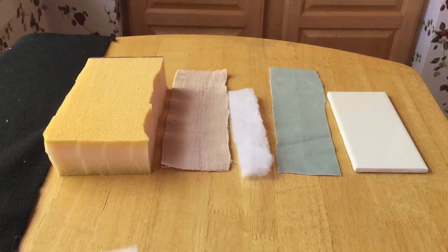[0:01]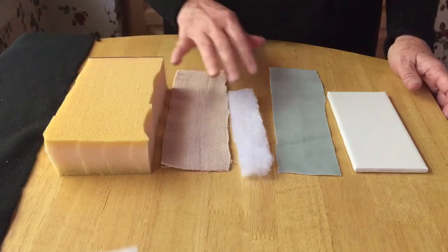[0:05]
I've had people ask me how I made the suturing practice station that you see me use on my YouTube channel. So I thought I would do a demo video so you can see how to make it yourself.
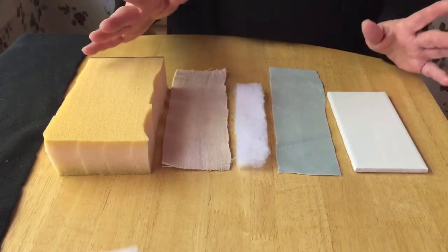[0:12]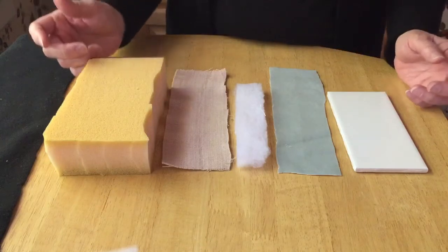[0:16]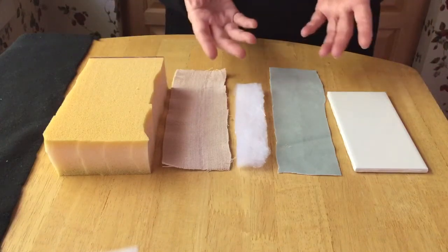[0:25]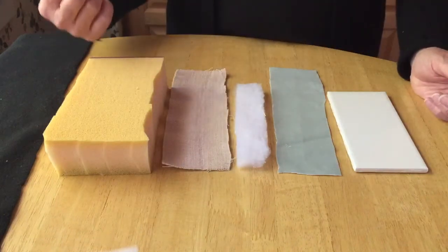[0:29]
Let me tell you first, I tried pig skin, I tried pig's feet, I tried chicken breasts and banana peels, and nothing worked as well as when I finally took a Swiffer mop head, you know, that paper, and wrapped an Ace around it and used a 6-inch Ace. I found the flexibility of the Ace mimicked the skin really well.
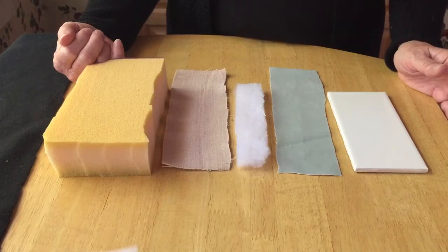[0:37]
So it was really crude, and I wanted to come up with something that looked more professional that I could use for the suturing lab presentations that I do. So I'm going to tell you what the supplies are.
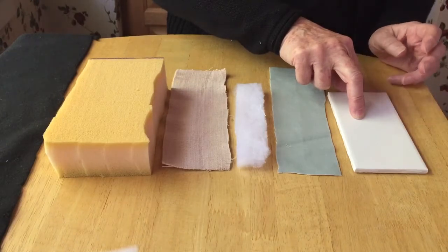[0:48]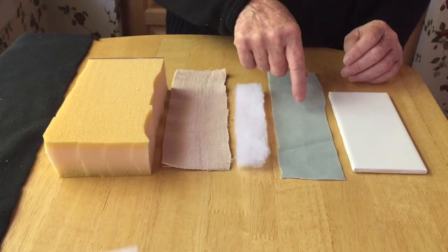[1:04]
A tile or a metal plate that I got from Lowe's or Home Depot. I did this because I was carrying 20 of them. I didn't want to carry 20 bricks. But if you're only making one of them, I would suggest you use a brick, because that gives you some nice weight for it. Then you choose any color felt or material that you want.
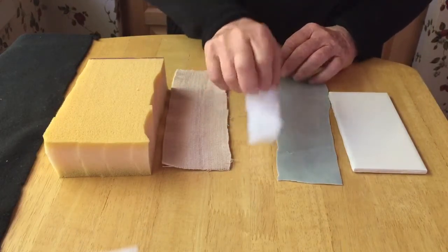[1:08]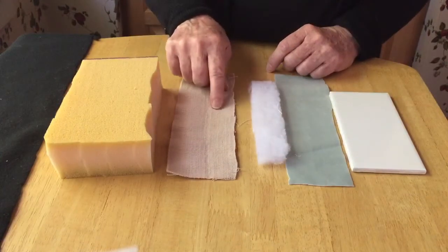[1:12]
This is kind of like a suede, which you want for your dermis. You choose some batting to make your dermis a little bit thicker. An Ace, you either use a 6-inch Ace cut in half, which is what this is, or a 4-inch Ace not cut in half.
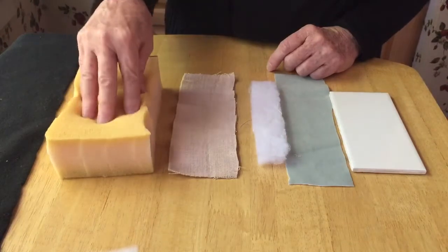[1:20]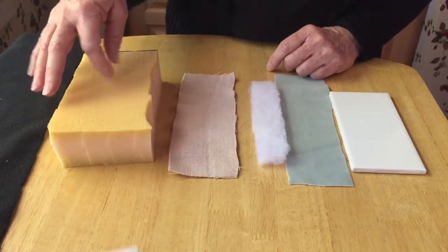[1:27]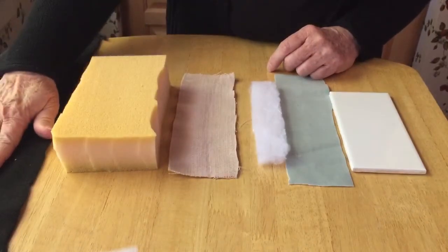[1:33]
And then you have a foam, and I like this foam that's kind of a memory-foam type because it's soft and you can actually keep your incision, quote, incision a little bit wider, so that you have to tie under tension and it mimics that. And then you need a felt, and I used a felt because I wanted something that would have traction. So if you put this on a surface that's textured, it's not going to slide. That was why I chose that.
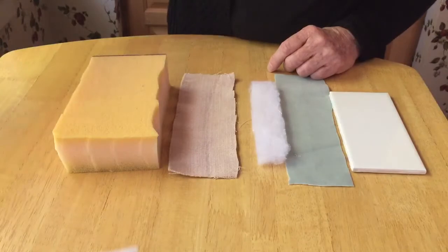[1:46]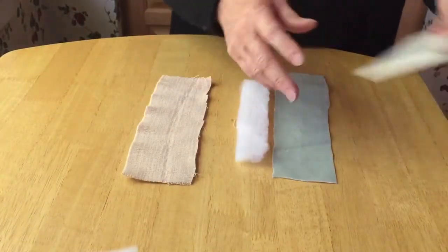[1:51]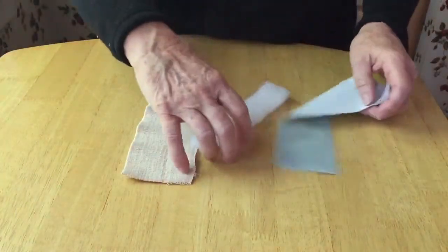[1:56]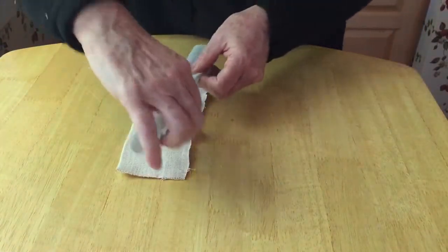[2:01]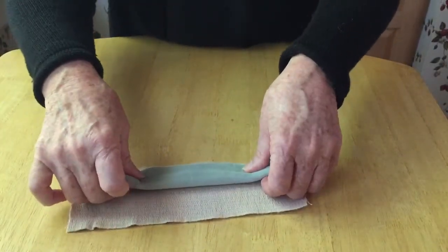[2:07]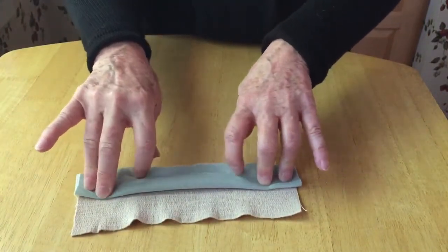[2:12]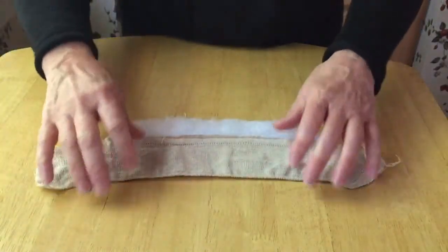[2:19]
Now let's go through the steps of how to actually put it together. So you take your quote dermis, and you fold it around the batting. And then you attach it and sew it. I may say suture instead of sew, but it's just because I'm thinking about the operating room. Then you sew it here to the Ace. And you do that twice because you have the two sides of the incision. So what you end up with is two pieces like this.
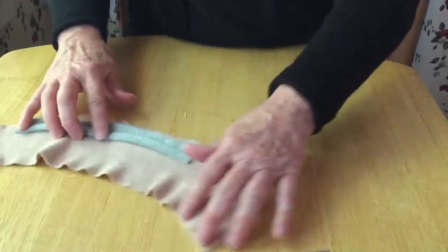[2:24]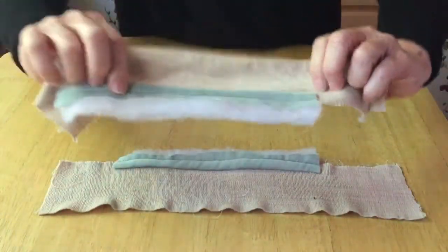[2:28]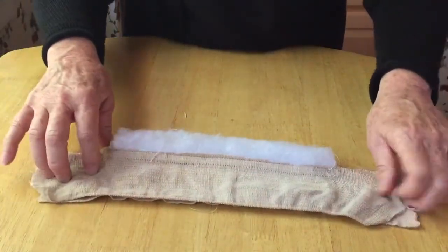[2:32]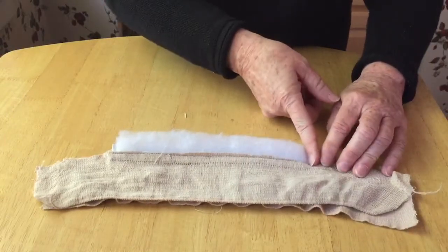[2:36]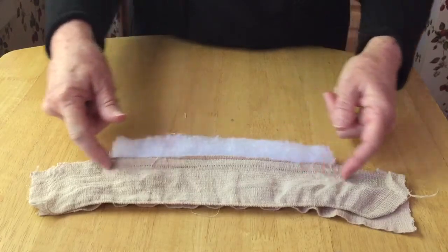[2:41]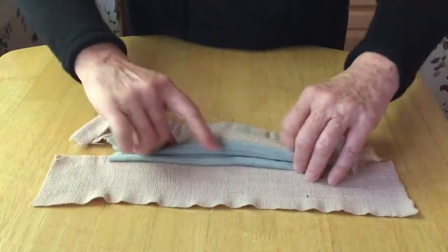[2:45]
So you take your two pieces and you put them colored sides together, and then you want to sew the two sides of the Ace together up over the dermis and over the top of the brick so you can mimic the corner of an incision. So you would sew it here. When you're done sewing, you open it, you would have an incision open here and it'd be sewed up to here. The next one will show you what that looks like.
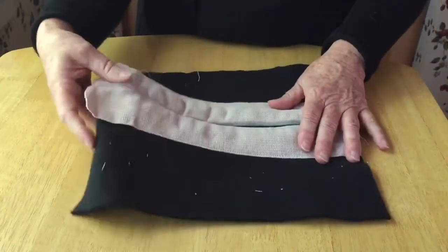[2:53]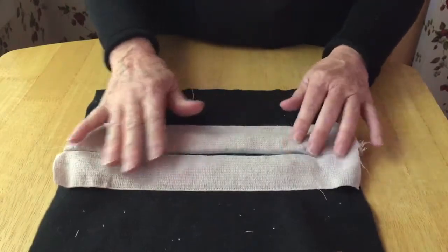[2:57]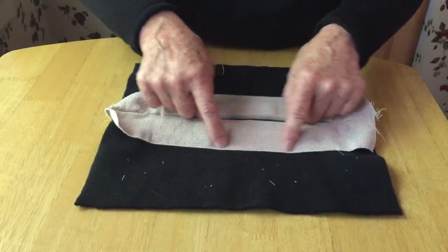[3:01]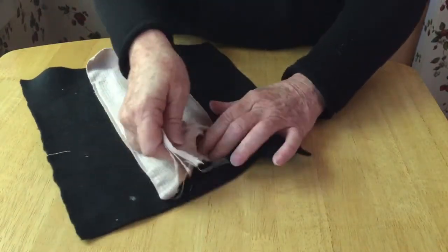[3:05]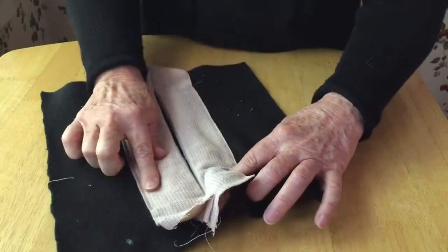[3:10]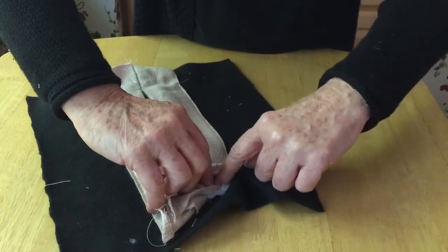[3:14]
This is actually one step further. So you've had that piece that you put on your felt. You're ready to put it on the felt. But before you sew this part here, you want to take that piece and sew it onto the felt right here. So you would fold this piece over here and fold here and then sew here. And then you do the same to this side.
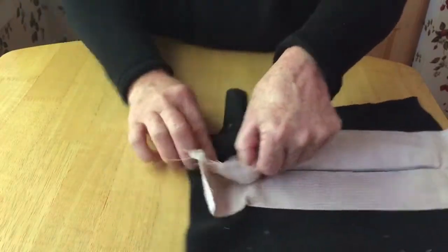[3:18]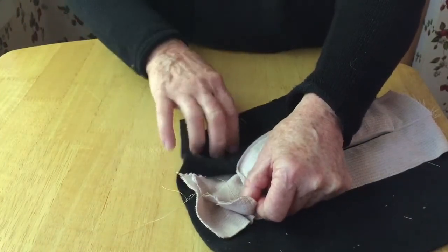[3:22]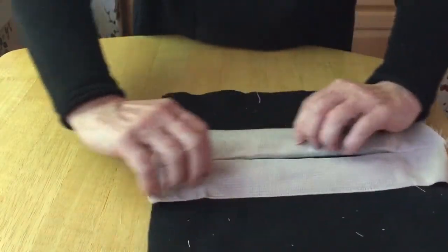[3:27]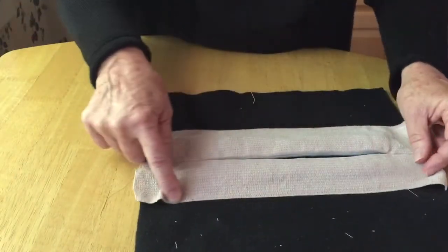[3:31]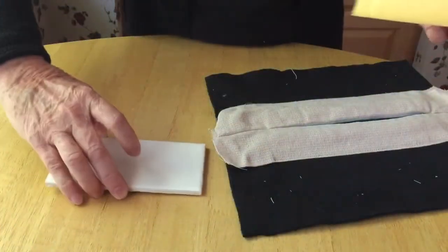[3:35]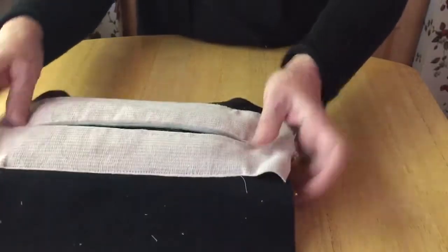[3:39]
You would fold this over and sew it along the edge to sew it onto the felt backing. And then you end up with that. And then you would fold your Ace over and then you sew the Ace along the edge here. And then you're ready for your last piece. When I first did it, it took 4 hours because I hadn't learned some of the shortcuts, but this is some of the shortcuts. So now you're ready to take that.
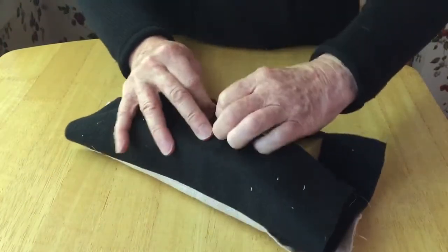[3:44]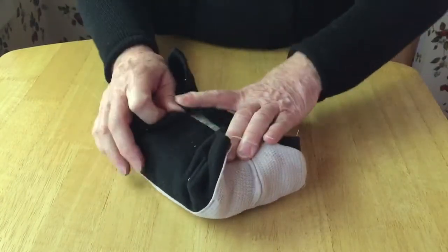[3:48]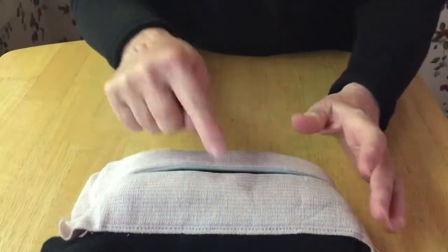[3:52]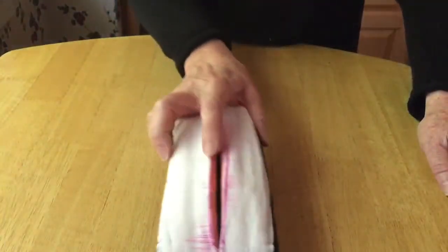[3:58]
And this is the only part that I do by hand now: you take it and you hand sew it over your brick or your tile and foam, whichever one you're using. So the finished products look like this, I just wanted to show you the two.
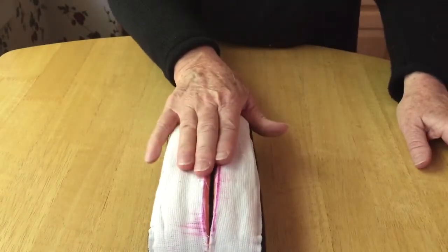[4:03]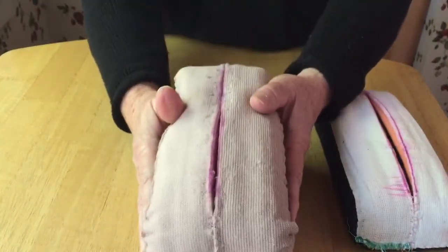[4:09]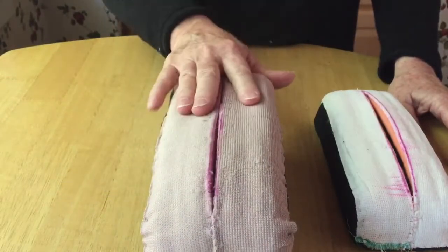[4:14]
This is the one with the metal plate, so it's a little bit lighter, but it's still effective. And this one here, you can see, is the brick, and it has a lot more weight to it. This is the one that I usually use. This is the one I would suggest if you're only doing one.